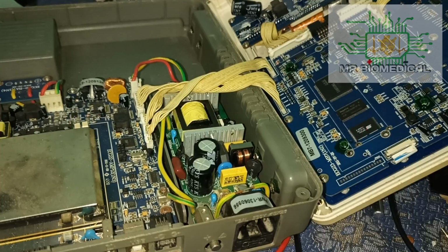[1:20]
Right, here we have an ECG machine which came in for no power. The model is Nidek, a 3-channel machine, and the problem is with the power supply board. But how do you tell whether the problem is with the power supply or the main board?
It is very simple. There are two indications here, one is AC and one is battery. If both are not blinking, then you can assume it is a power supply board issue. Before going to the power supply board, you should make sure the fuse is working well and the circuit is good, including parameters like fuses, NTC, varistor or something like that. That is a circuit protector, so make sure everything is working well.
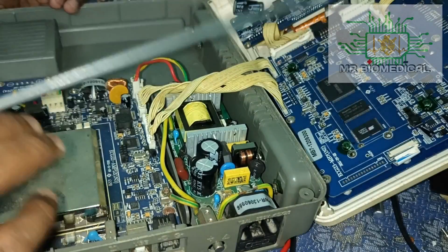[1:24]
In this case, we're going to open this machine and see what's inside and how that PCB looks. After that, we will see how to rectify the problem, and whether it will be working well or not. So let's see. Now we open the machine, and I'll tell you one by one.
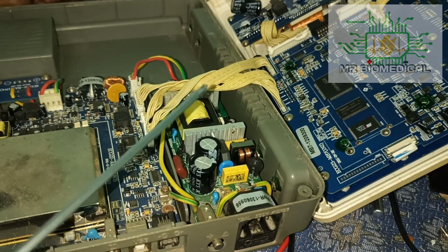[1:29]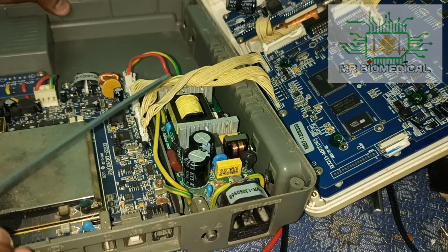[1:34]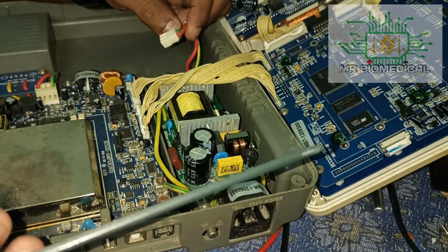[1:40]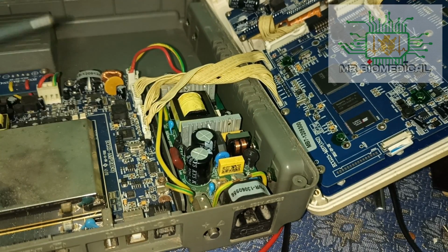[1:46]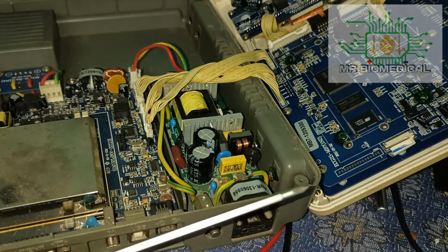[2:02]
This is the power supply board, because the 230 input is coming here, and the processors are here, and then it will give the output. This is some 12 volt or 24 volt or 8 volt, 9 volt, something like that. It will go to the main board. This is the main board, and this section is called the acquisition section. Acquisition means it will get the signals from your body and convert them to the graph in the machine. So this is the main module, and this is the acquisition module, and this one is
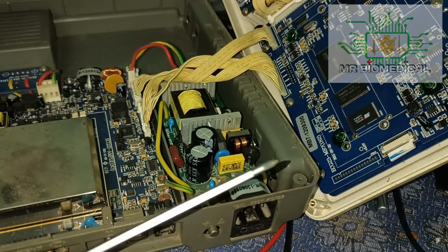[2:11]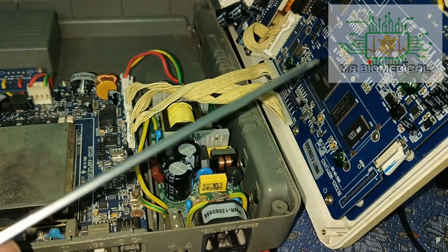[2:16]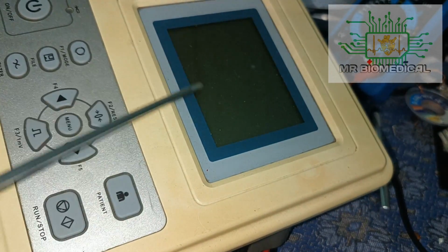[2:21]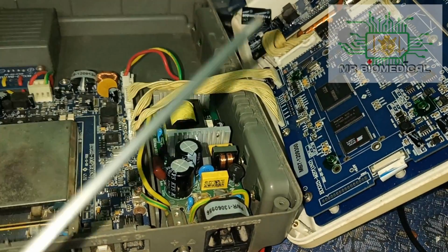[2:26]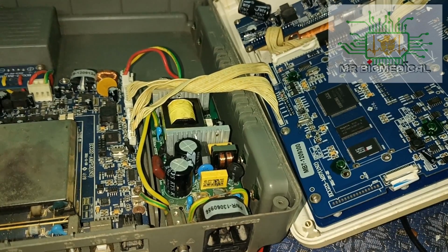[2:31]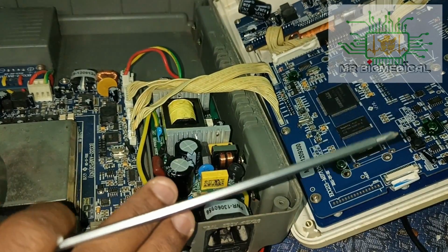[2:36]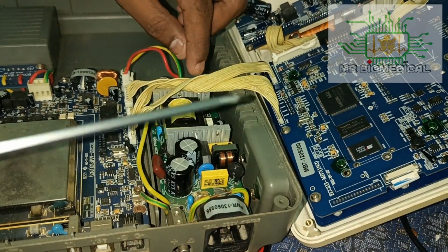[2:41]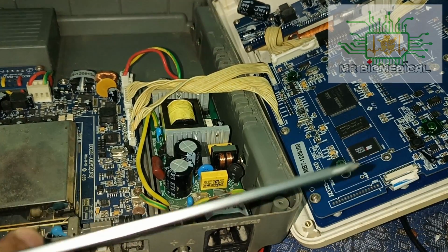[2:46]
the printer. As you can see, this is a printer, and this one is the LCD drive, and here you can see the LCD and keypad PCB, and this is the printer. Okay, so these are the basic parts, and now we are going to check what the issue is. As you can see, we didn't get any LED indication. So I will open this power supply module, and after that we will see where the complaint is.
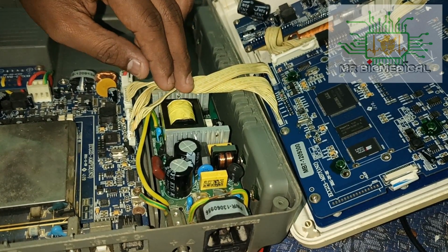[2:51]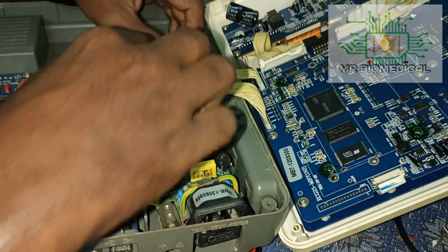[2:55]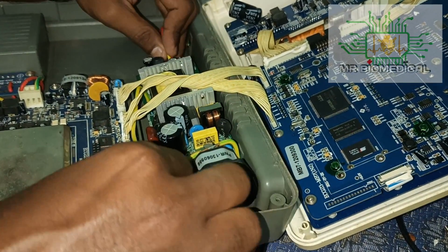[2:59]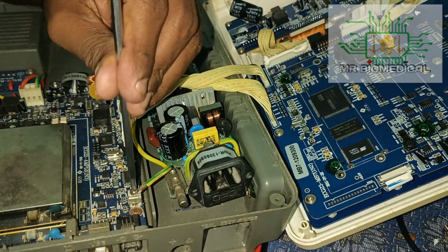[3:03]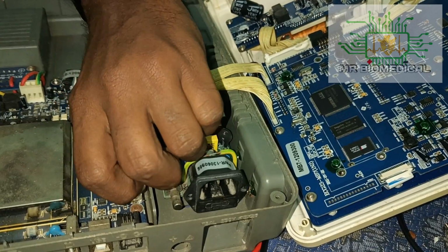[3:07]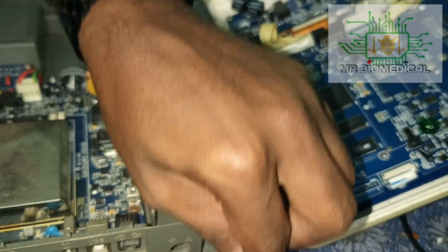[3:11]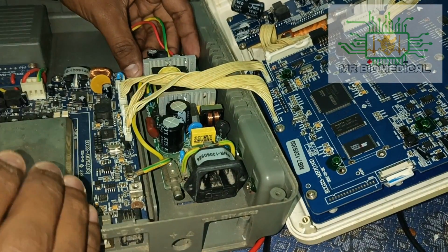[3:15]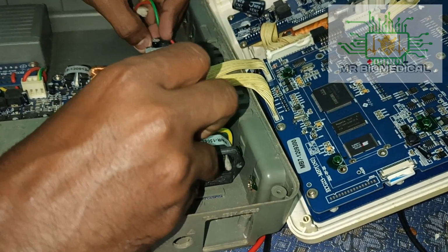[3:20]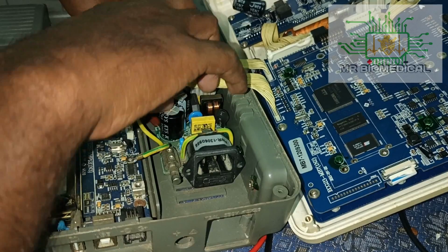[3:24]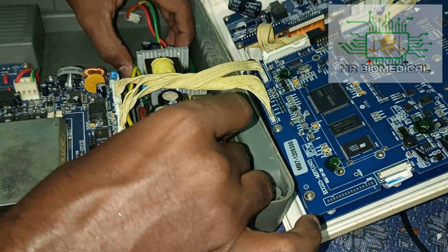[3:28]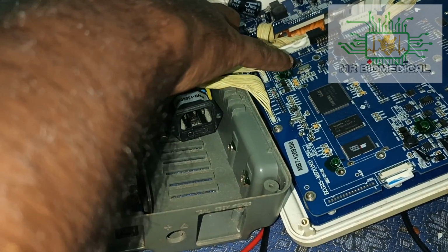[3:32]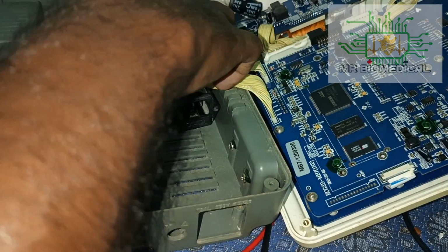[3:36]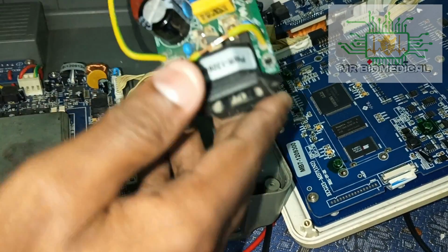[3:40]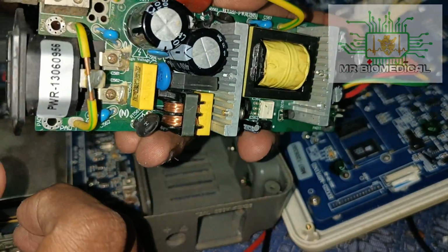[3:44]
I'm removing the power supply from the machine so that we can get full access to repair. For the beginners, I will tell you the secret. If you have a problem with a power supply board, just go with a visual inspection, because 70% of power supply board complaints can be repaired by visual inspection alone. You have to know how to visually inspect it, and after that you can use some multimeter things, and you will succeed. So this is how the PCB looks.
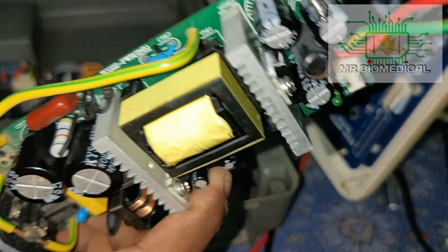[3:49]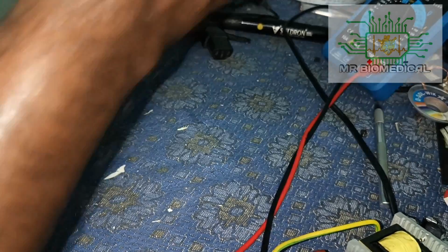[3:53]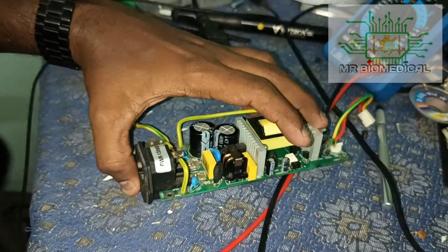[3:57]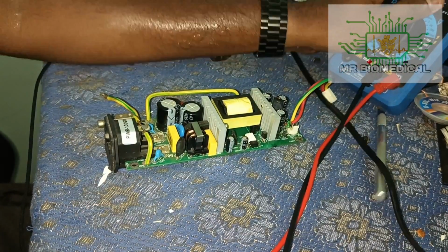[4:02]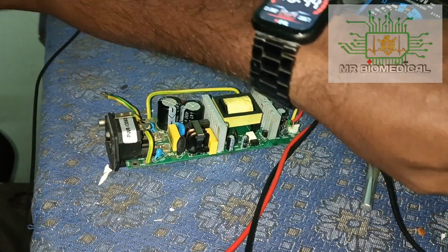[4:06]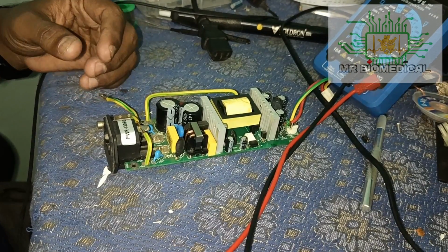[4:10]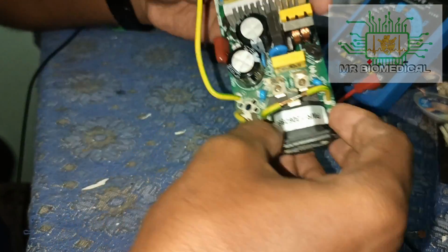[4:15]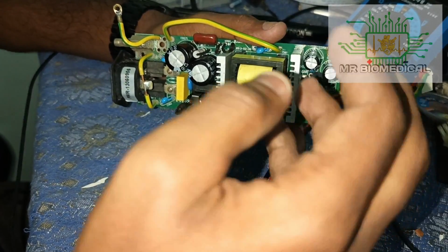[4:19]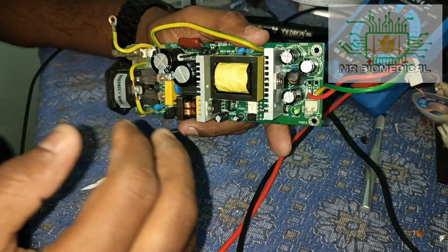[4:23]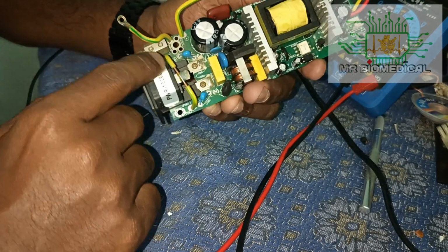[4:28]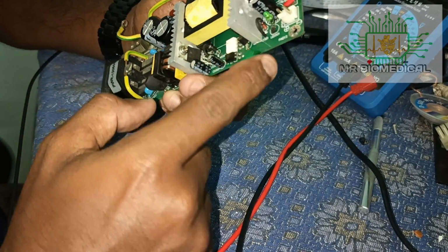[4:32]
Okay, so now I'm folding up the ECG machine, and we are just going to work on this PCB. The requirements are the multimeter, soldering iron, some screwdrivers, and something like that. Now the first procedure is always visual inspection. That is what I am always doing, and that is what all electronics engineers are doing worldwide. First thing, they will see if there is any damaged part or something.
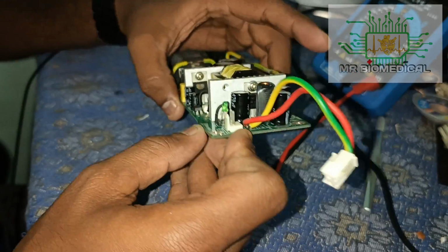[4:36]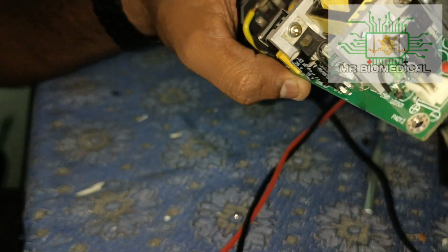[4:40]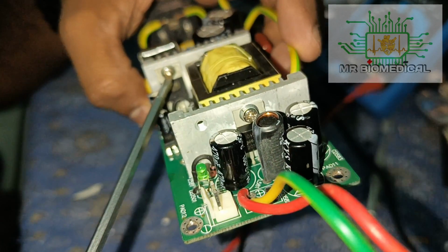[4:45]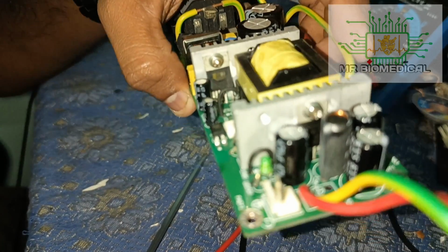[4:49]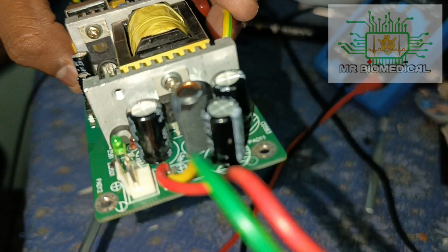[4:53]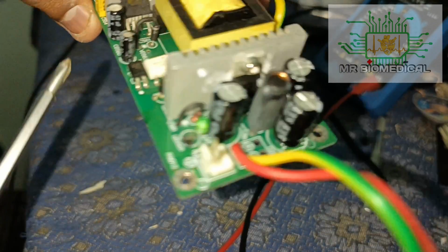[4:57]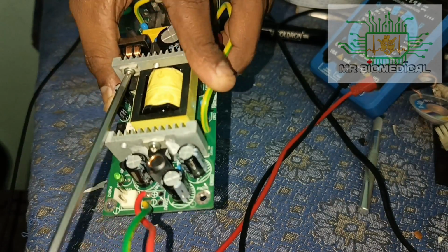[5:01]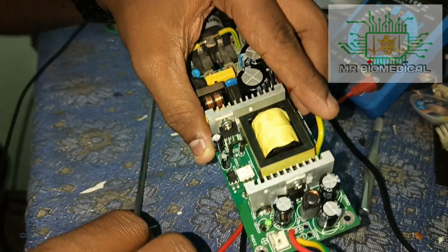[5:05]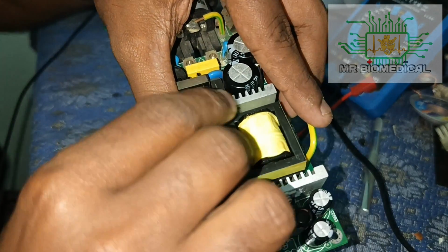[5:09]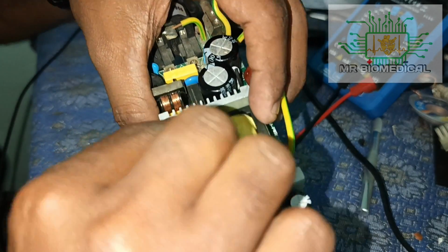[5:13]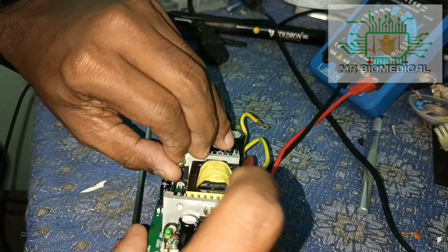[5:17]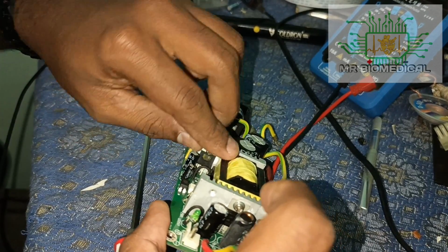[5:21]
As quickly as I can, I see a damaged IC here, a damaged transistor or damaged IC, something like that. As you can see, 1 2 3 4 5 6 pins are there. And the thing is, we don't know the value of this, because it blasted, so we couldn't see the value of the transistor. So what I'm going to do is remove this one and desolder it from here.
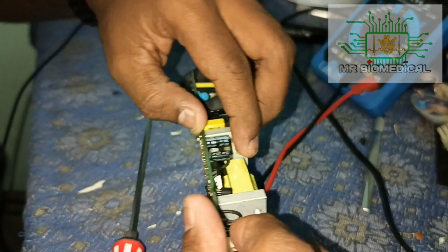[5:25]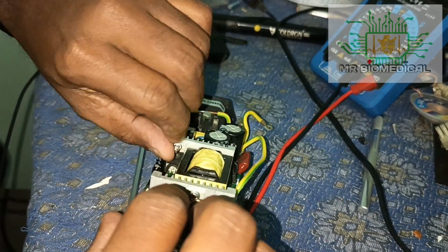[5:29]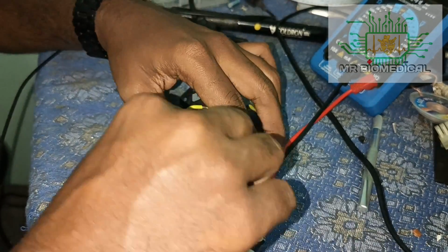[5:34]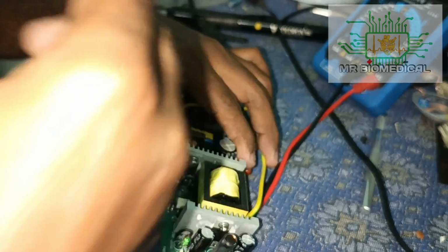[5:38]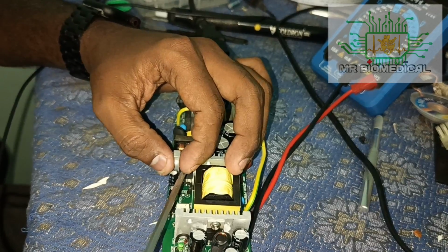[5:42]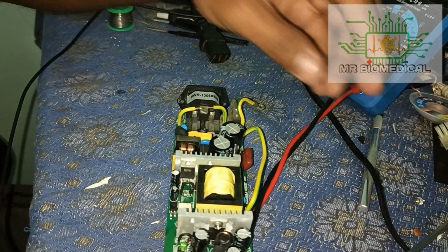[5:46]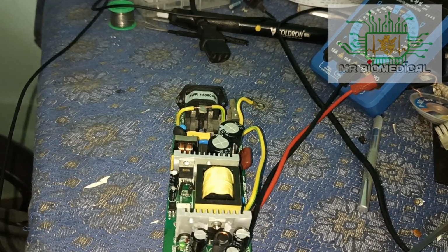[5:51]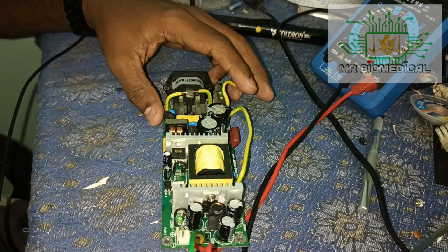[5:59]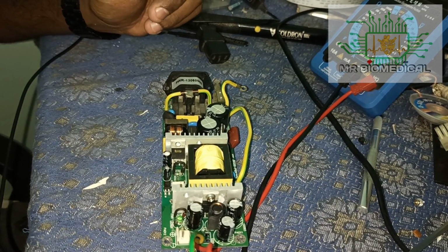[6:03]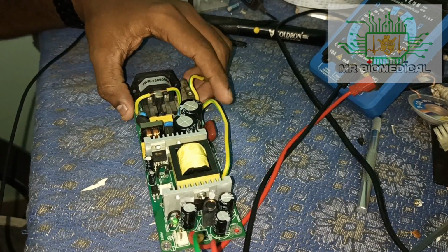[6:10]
After that, we will see whether we can find any IC in donor boards. We have a lot of donor boards, and if you need any donor boards, or any spares, or any components, you can directly WhatsApp me, and I'll be guiding you every time. And we are going to open our own shop very soon. In that shop you can see a lot of items which I'm using, a lot of multimeters and microscopes, and little components, and whatever.
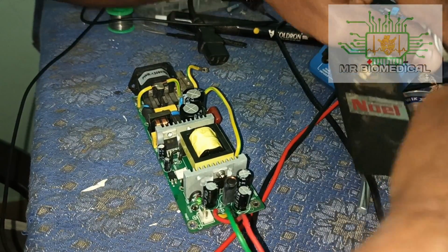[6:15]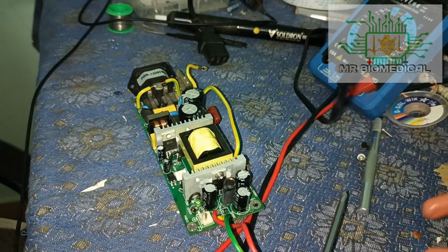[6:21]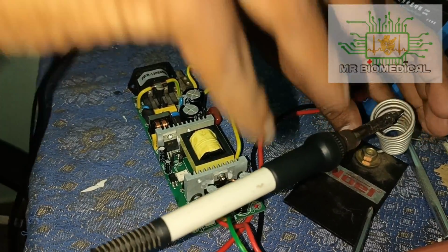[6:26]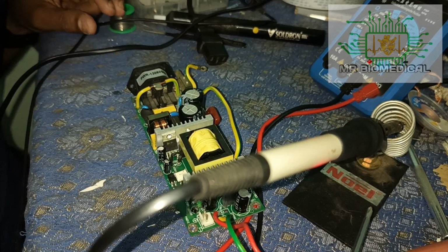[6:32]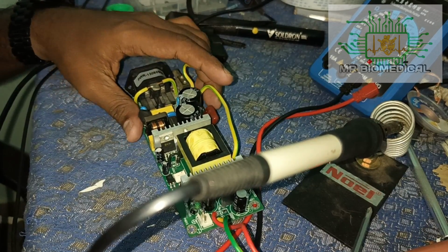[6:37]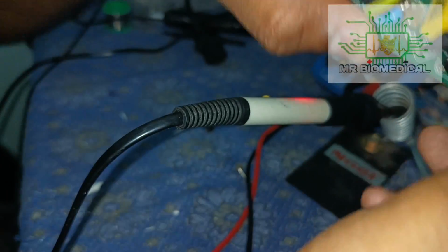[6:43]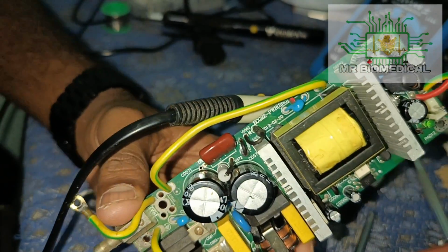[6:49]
Now I'm going to switch on my soldering iron, so we can remove it. Okay, it will heat, and before that I will tell you the major parts in any power supply board, so that you can have a little idea about how it works.
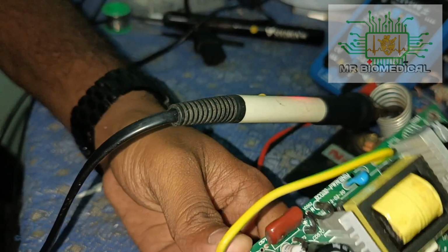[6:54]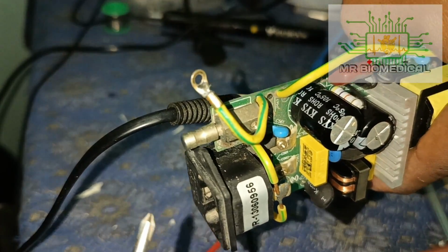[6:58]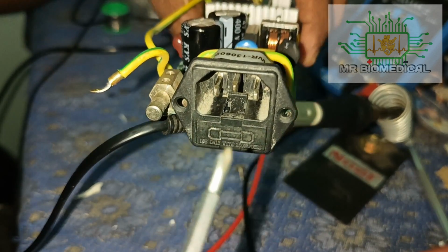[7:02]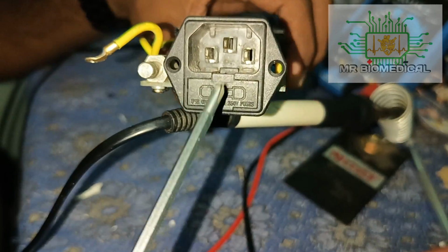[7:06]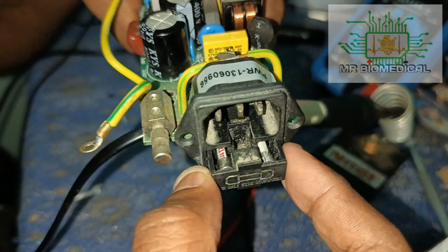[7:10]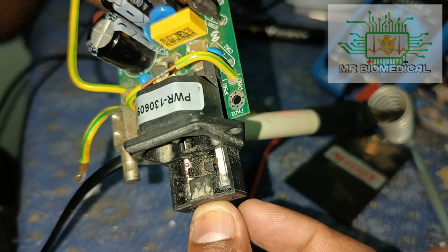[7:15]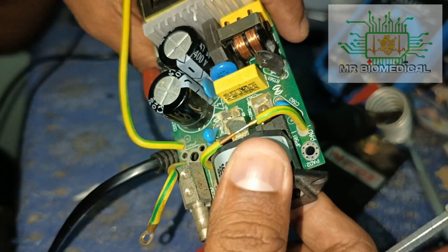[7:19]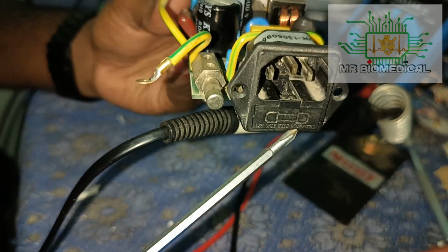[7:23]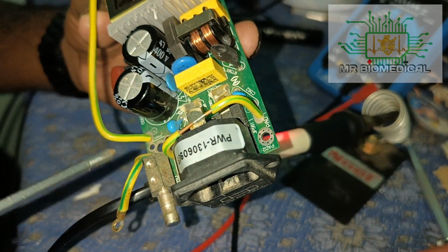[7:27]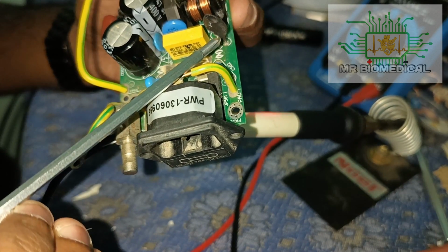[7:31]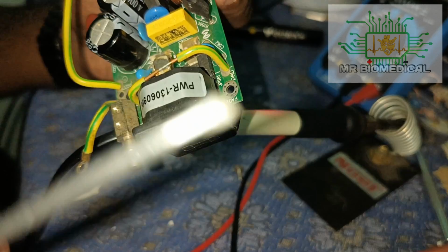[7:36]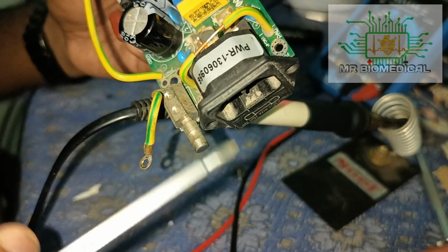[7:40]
This is the input, maybe 230 or 110, depending on which country you are living in. This is a socket, and this is a fuse. How to remove it? You just pull, and boom, you can see two fuses, and I already checked these fuses and they are fine. If you find this fuse keeps blowing, you have to check the circuit protectors. And what are the circuit protectors? This is a varistor, and this is an NTC, and some fuses. These are the circuit protectors which you should always look at.
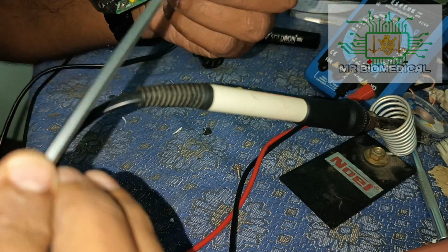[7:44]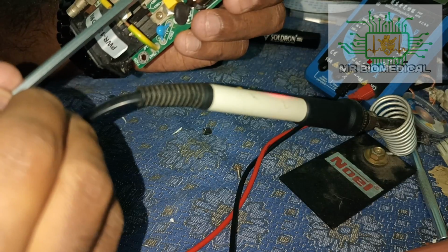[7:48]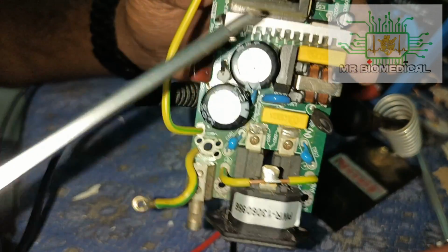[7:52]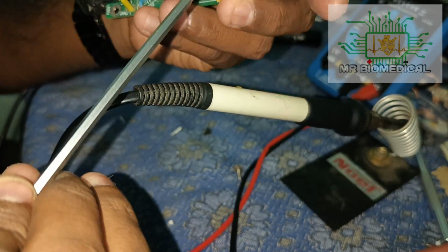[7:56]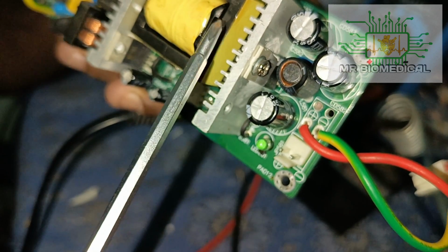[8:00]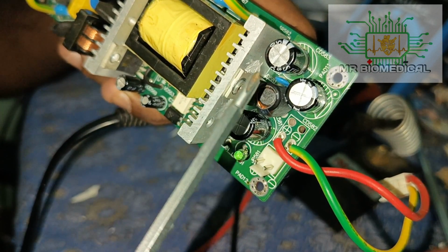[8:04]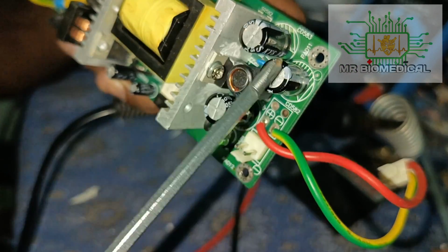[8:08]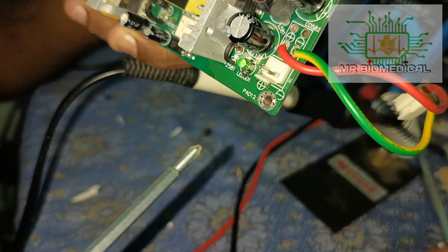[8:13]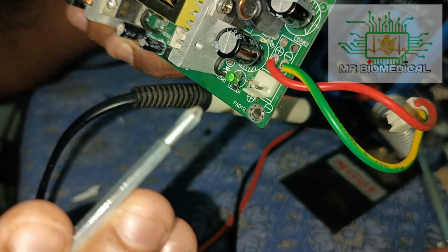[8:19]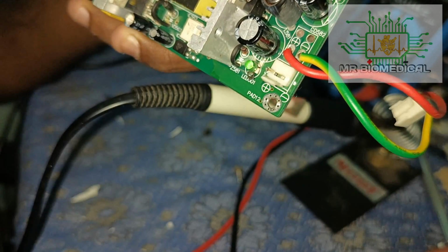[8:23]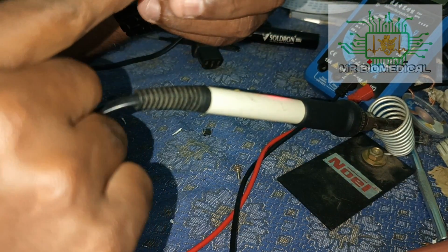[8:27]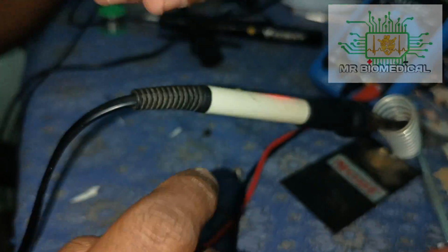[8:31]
After that, if you have a short circuit in the bridge rectifier or capacitor or something like that, then also the fuse will blow. This is the primary side, and this is the secondary side. In case the primary side is fine and the secondary side is shorted, you can easily see it through visual inspection, or else you can use a multimeter to test which component is damaged, or which component is opened or shorted. It's so easy. So first thing, we should remove this IC from the board.
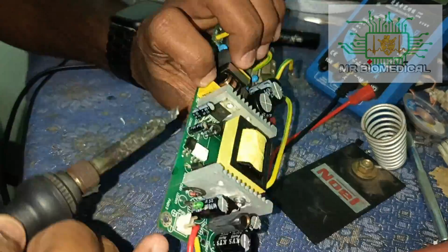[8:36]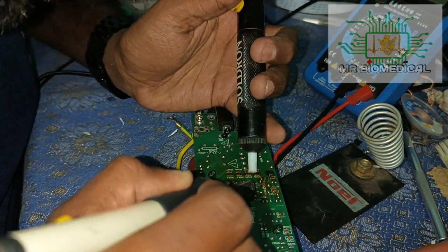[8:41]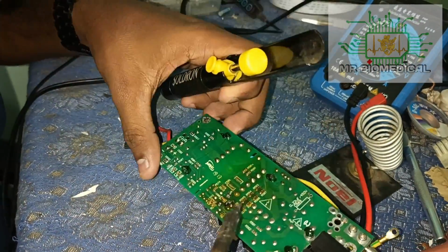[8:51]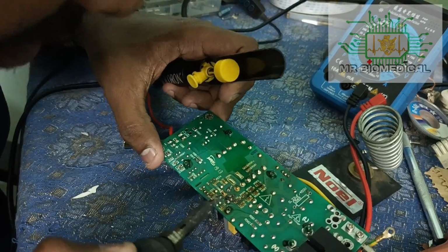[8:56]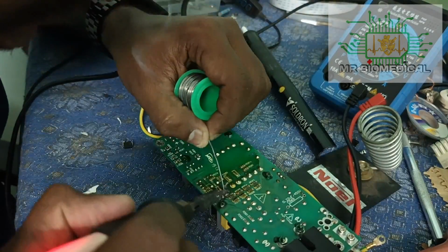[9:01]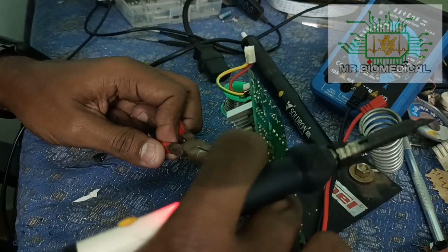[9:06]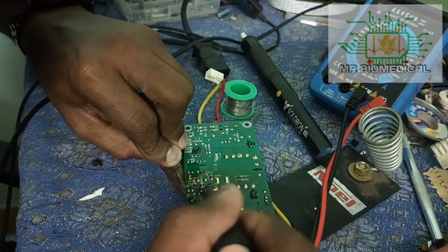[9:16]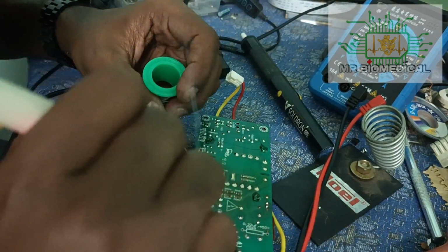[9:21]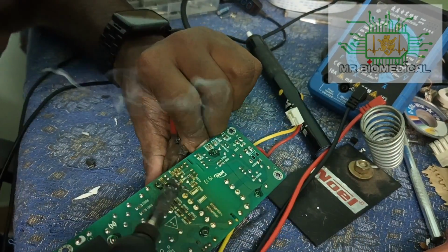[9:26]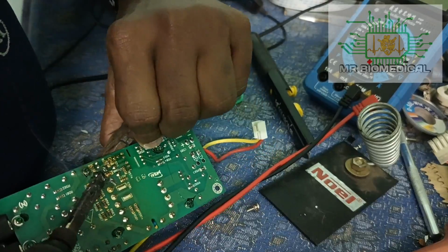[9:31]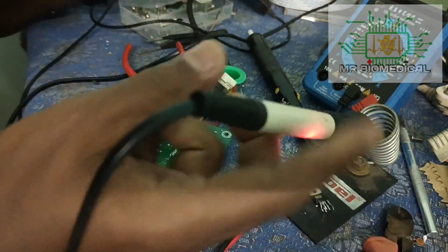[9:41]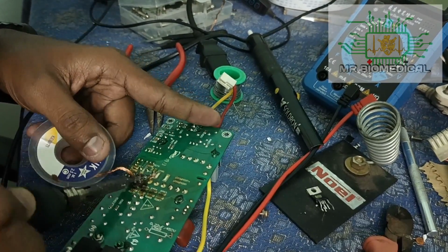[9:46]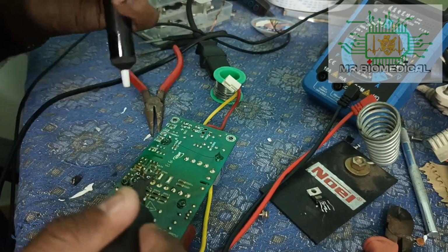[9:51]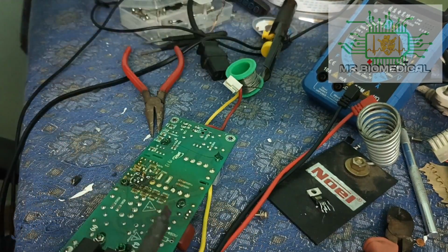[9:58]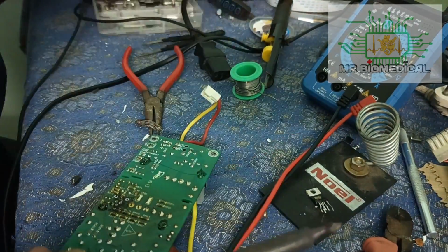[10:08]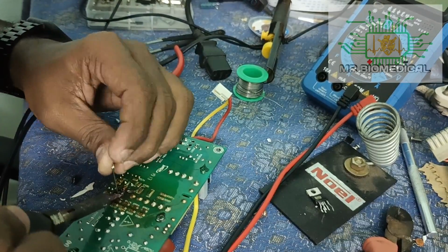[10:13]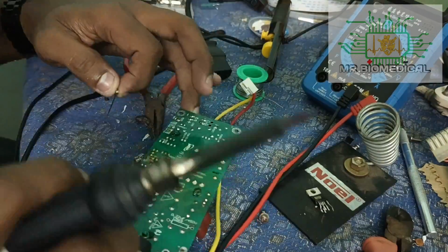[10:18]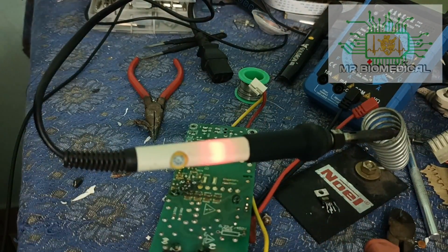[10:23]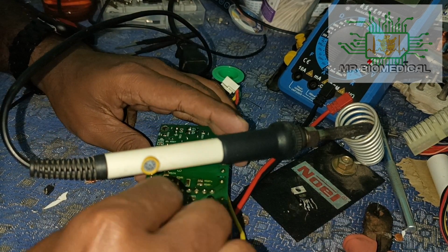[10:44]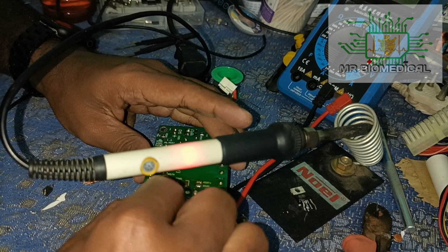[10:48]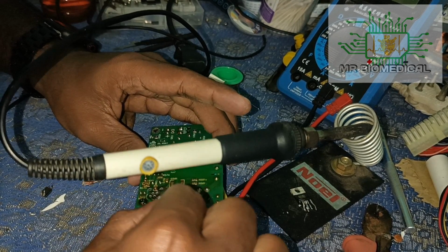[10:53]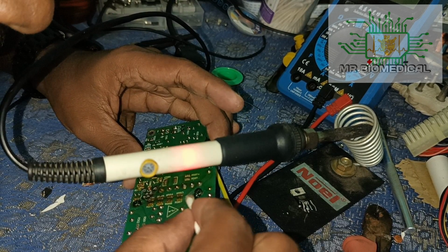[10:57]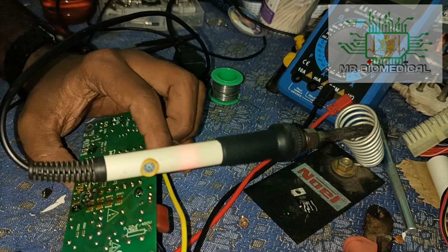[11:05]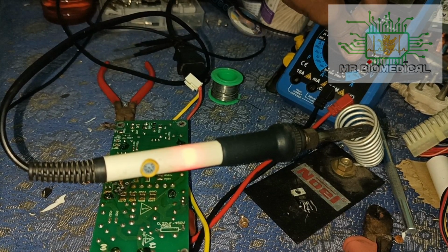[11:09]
Now it's cleaning time. I should clean this one properly. I'm using NC thinner for cleaning the boards. I'm using it in both SMD and SMPS repairs. So you choose yours and make sure every pad is having proper connections with the board.
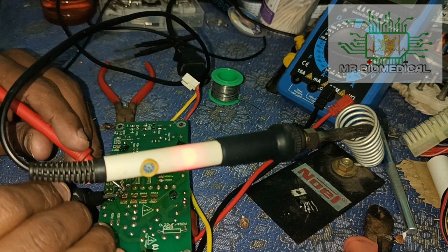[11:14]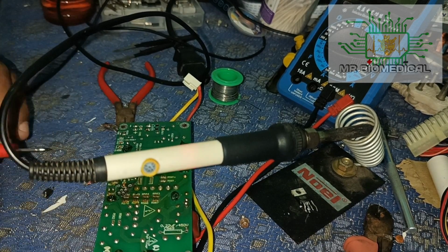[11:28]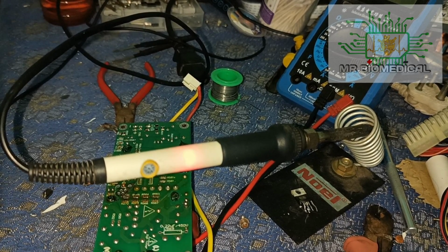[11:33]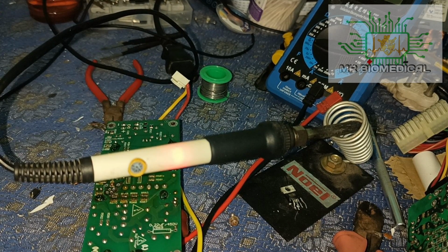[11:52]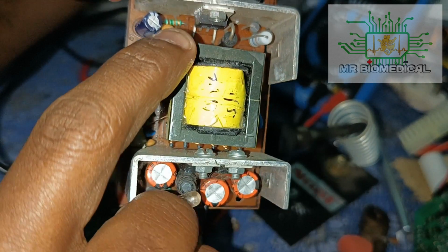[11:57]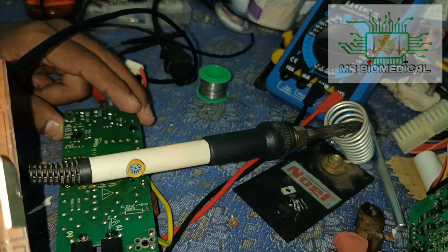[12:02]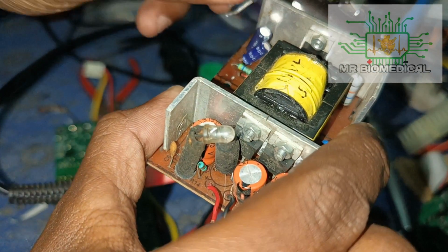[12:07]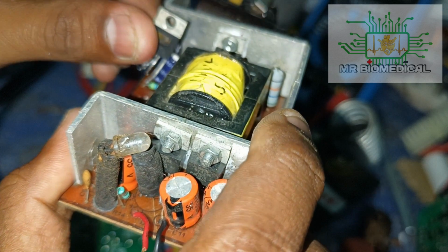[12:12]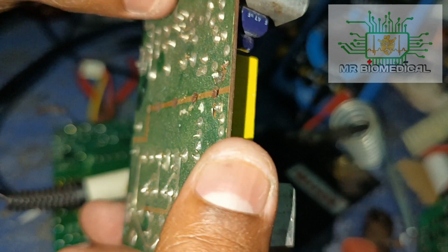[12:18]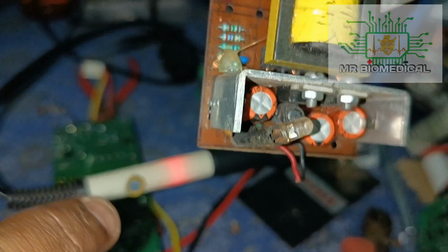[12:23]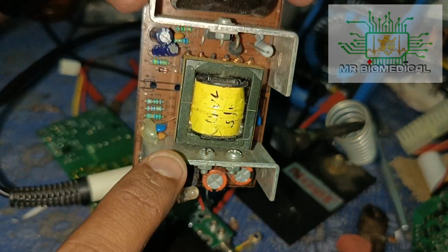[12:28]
As I told you earlier, I'm having the donor board here, and you can see some type of transistor over here. Wait. So it looks like the same one, so I think we can use this one. And here also, 1 2 3 4 5 6 pins. So let's remove this one and put it here, and see whether it will work or not.
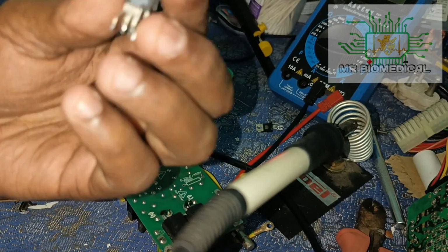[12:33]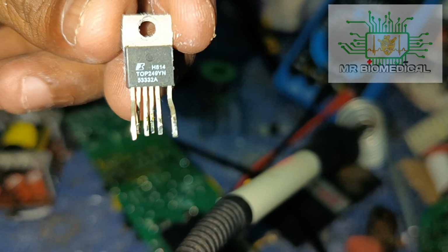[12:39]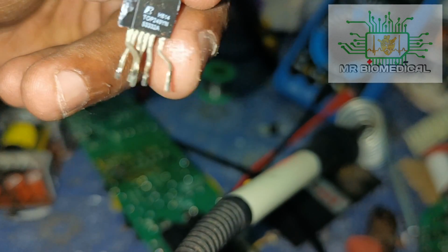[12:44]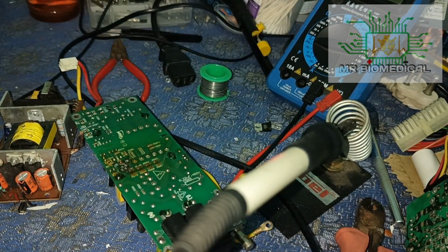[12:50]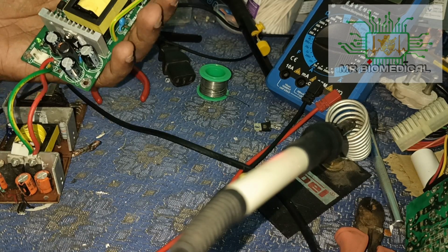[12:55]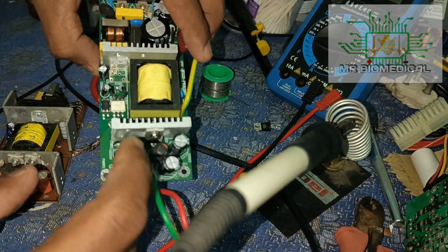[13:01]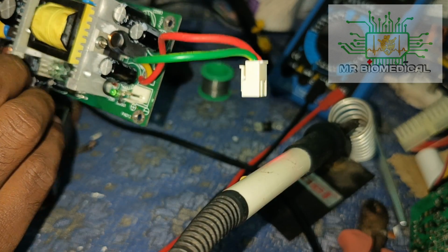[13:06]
Okay, now we removed this transistor IC smoothly, and this is a TOP249YN TOPSwitch. So I don't know whether it will work in that board, but still I'm going to try, because it is the only way, it is the only guess I have now, because that part was completely damaged. So we'll put this into this board and see whether it will work or not.
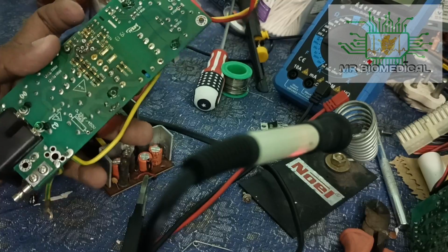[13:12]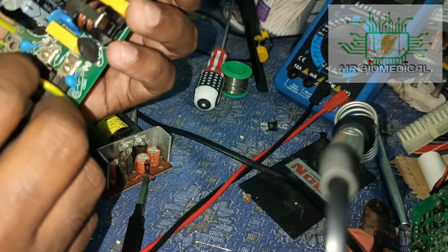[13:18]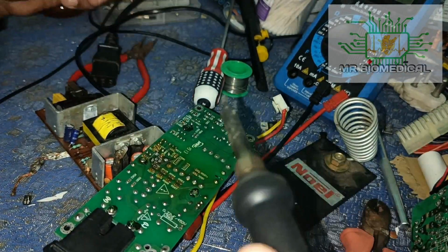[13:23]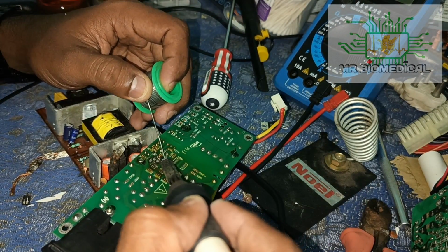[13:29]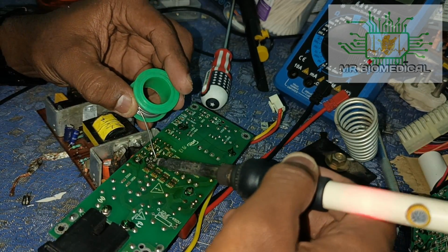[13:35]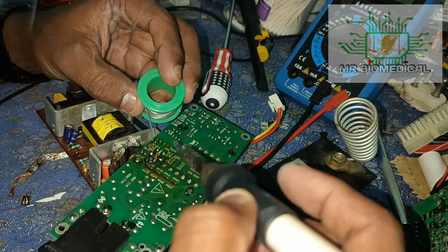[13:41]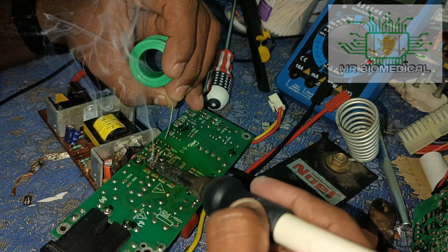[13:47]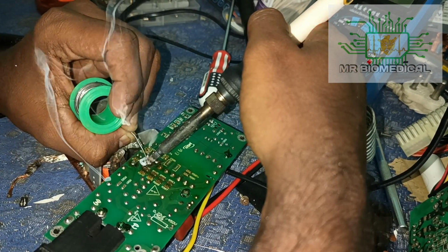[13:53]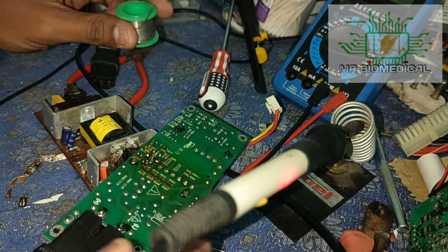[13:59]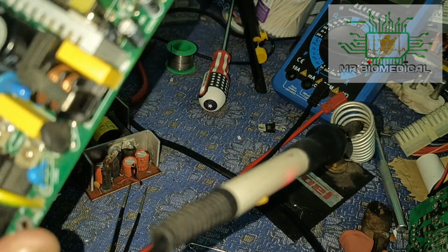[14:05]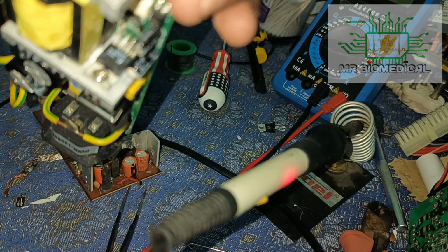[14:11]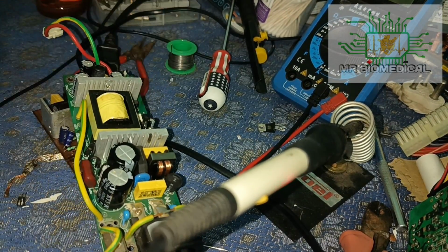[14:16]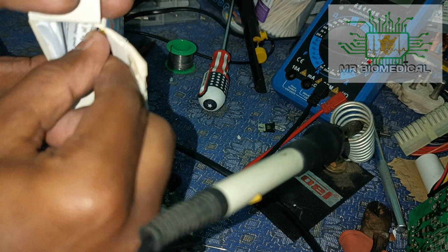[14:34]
Okay, now we connected the IC here and soldered the legs, and that's it. Then we can check whether the machine will work or not. That's it, it's all over. Now we can see front, back, and okay, now we connect this to the machine and see whether it will work. If it is not working, then we can do the alternatives, and I have this module, so we can use that alternative, don't worry.
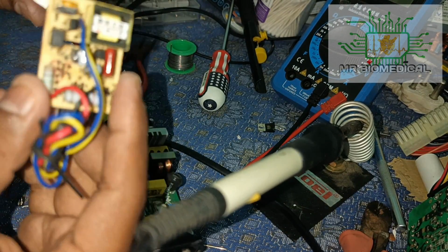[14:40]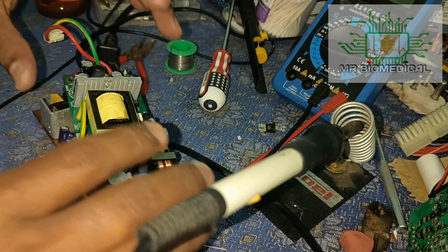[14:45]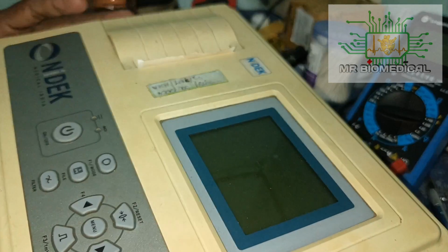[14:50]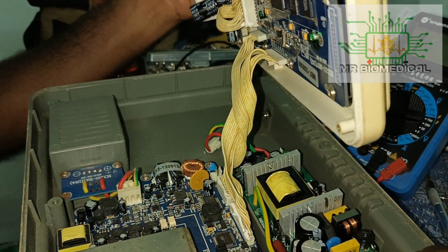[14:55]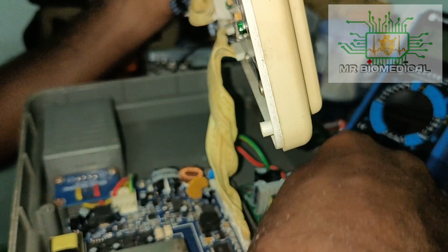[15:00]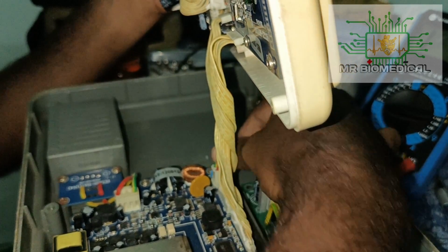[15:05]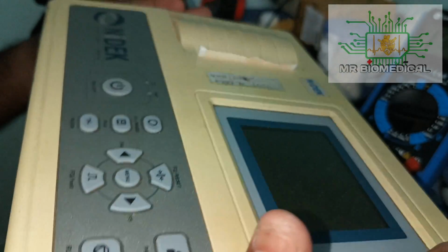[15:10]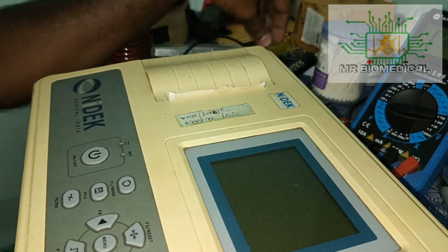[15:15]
So now I'm going to check this board on the machine. So now back to the connections. It is a more simple connection. One is input and one is output, that's it. Output connections here and input like this, and hope it will work. Let's see, where is the power cord?
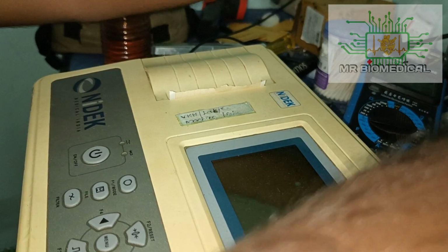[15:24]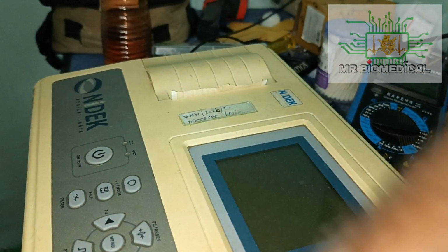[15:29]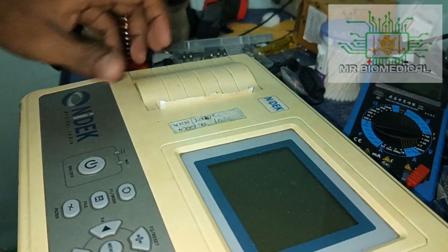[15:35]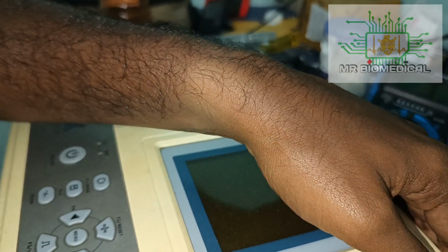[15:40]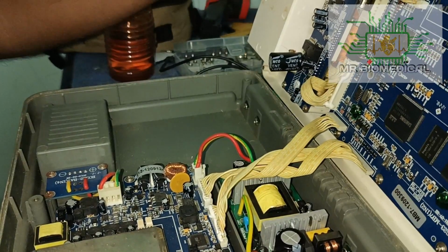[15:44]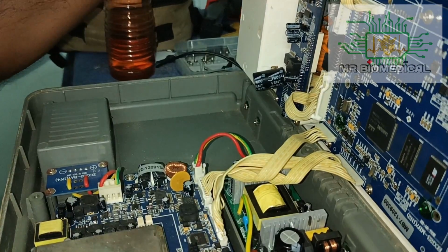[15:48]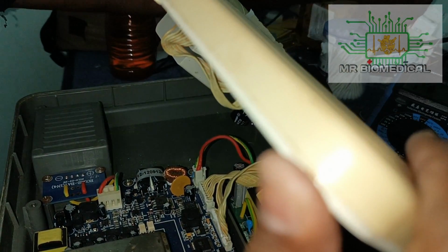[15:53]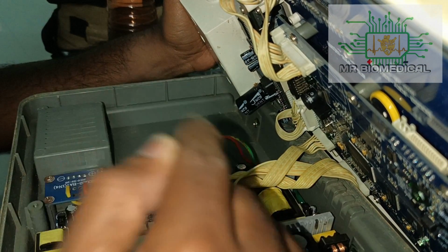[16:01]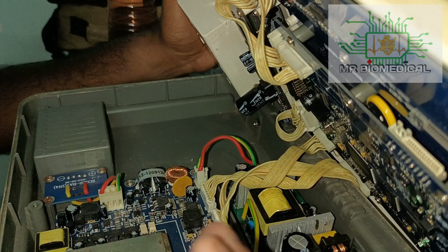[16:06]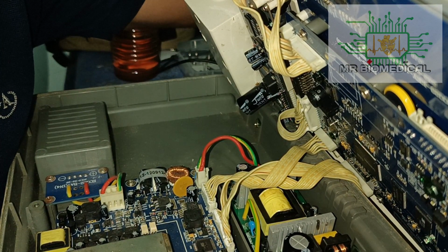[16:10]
Okay, I have a power cable here, and let's fix it here. Make sure every connection is not loose. Sometimes a blast will happen because we don't know whether the IC we put is right or wrong. So sometimes it will blast. So get ready. See, you hear one sound, click.
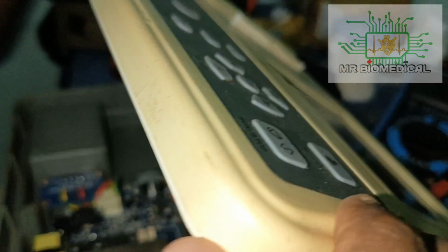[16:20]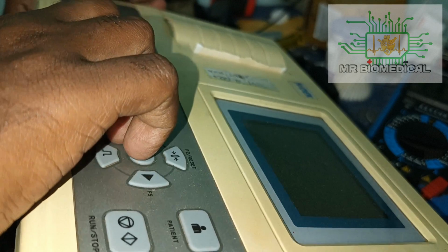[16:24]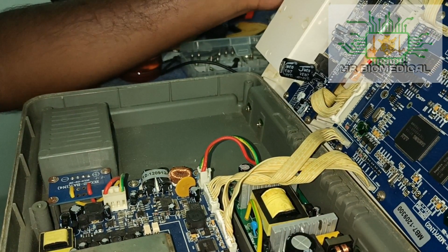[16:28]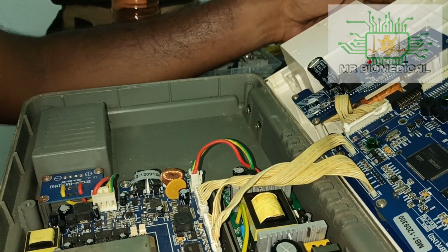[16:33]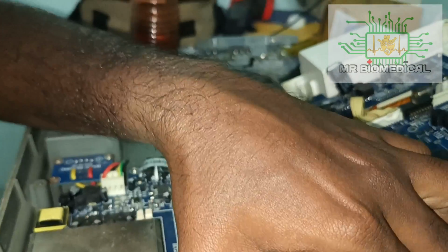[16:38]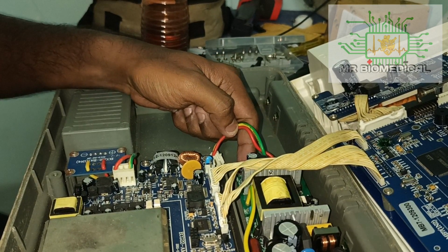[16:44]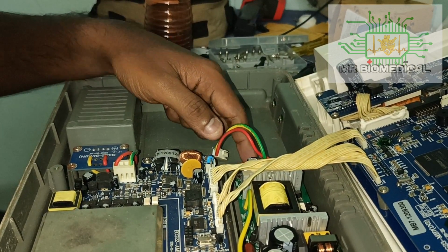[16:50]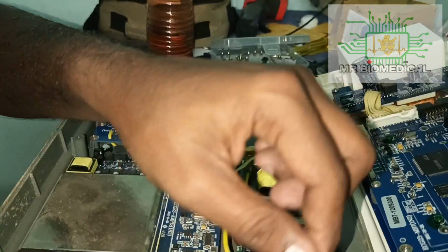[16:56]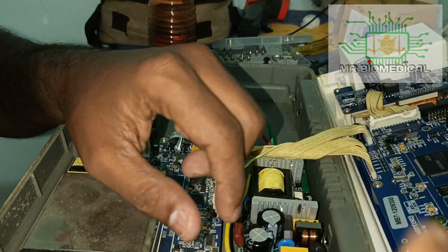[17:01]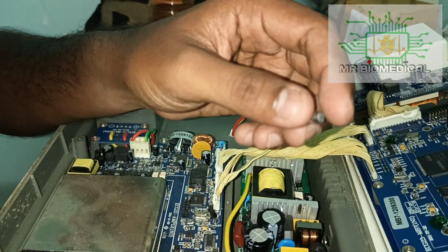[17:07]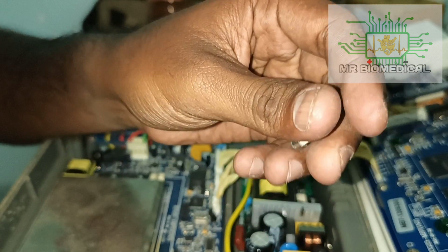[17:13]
And no damaged component here. How about the fuse? Remove everything and remove the fuse. The fuse is fine, and the other fuse is also fine.
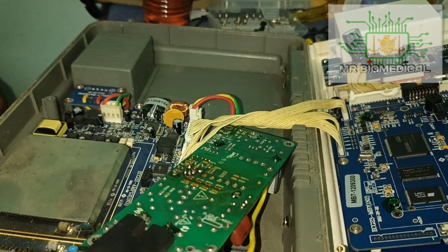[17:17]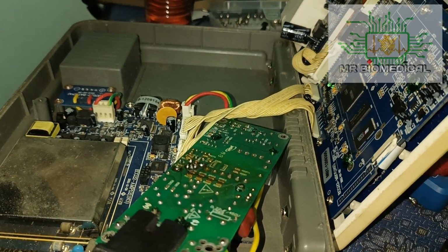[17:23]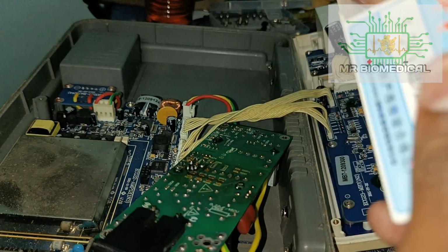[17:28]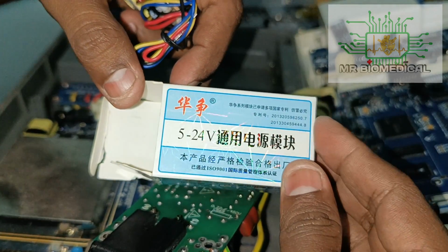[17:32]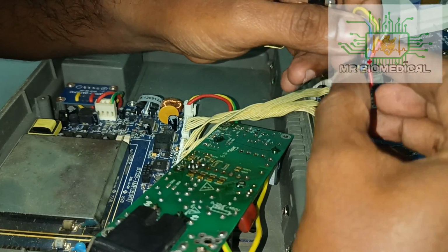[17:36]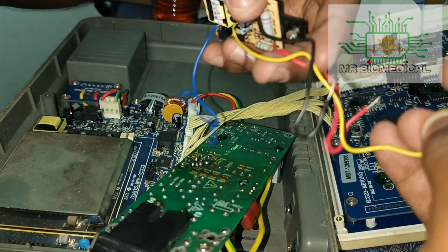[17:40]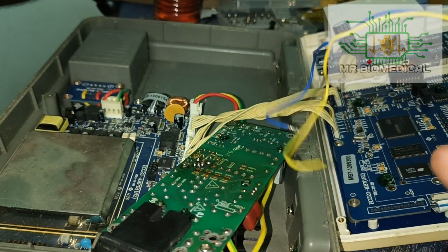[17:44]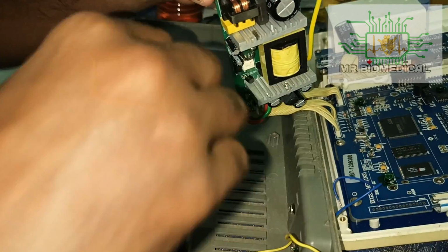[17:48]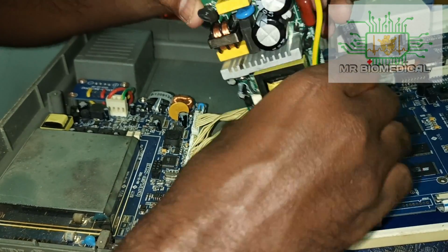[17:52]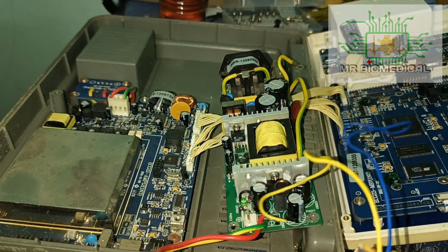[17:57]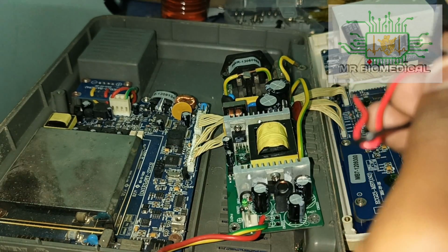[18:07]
So now we are going to the second method, which I'm going to use here. This is a 5 to 24 volt variable voltage module, having 4 wires, one input and one output. So I'm fixing it here, and then we'll see whether it will work. I hope it will definitely work. I've connected it to several monitors and several power supplies, and the result was good. So we can believe that this will solve this. Let's see.
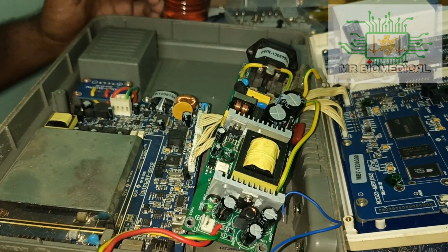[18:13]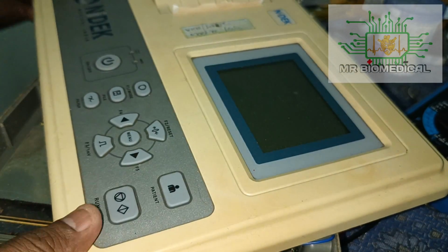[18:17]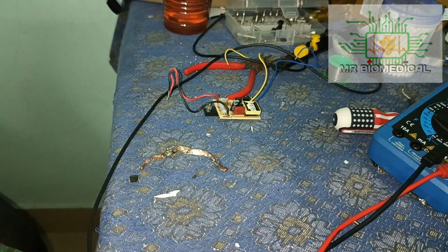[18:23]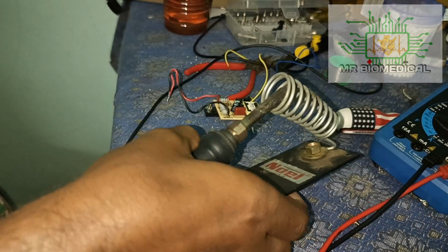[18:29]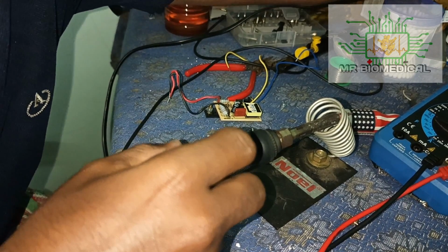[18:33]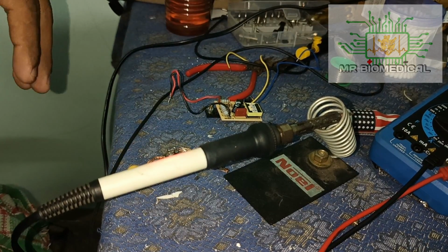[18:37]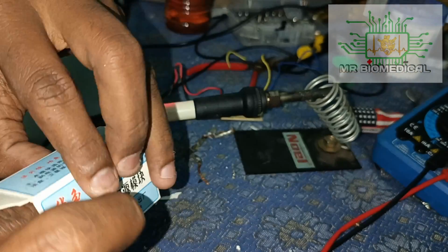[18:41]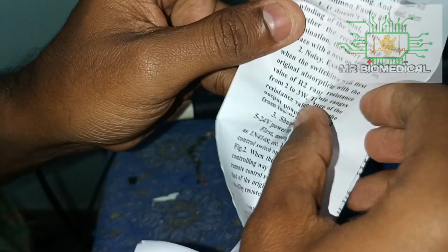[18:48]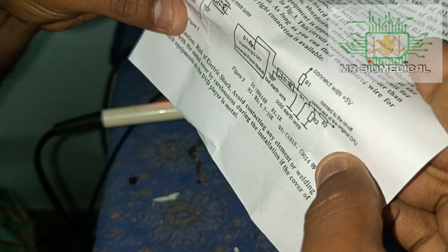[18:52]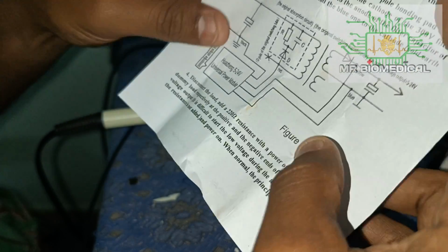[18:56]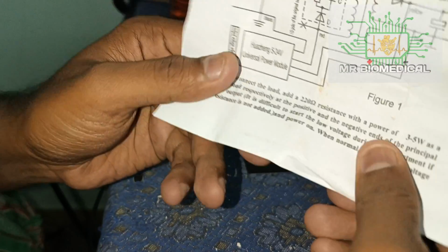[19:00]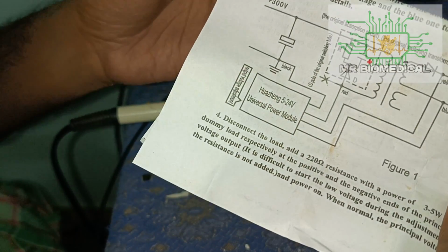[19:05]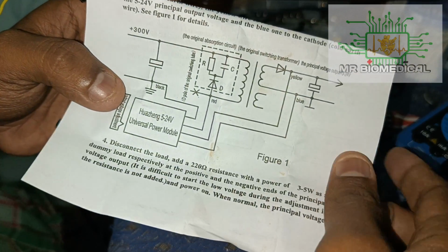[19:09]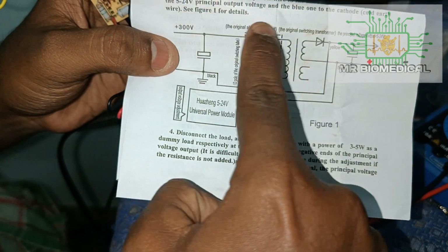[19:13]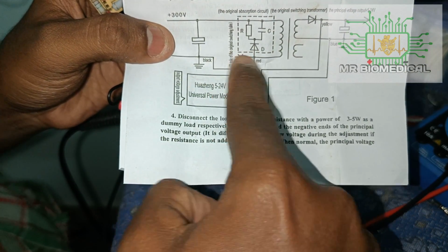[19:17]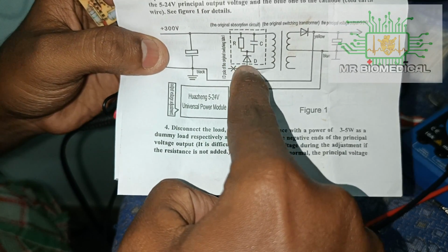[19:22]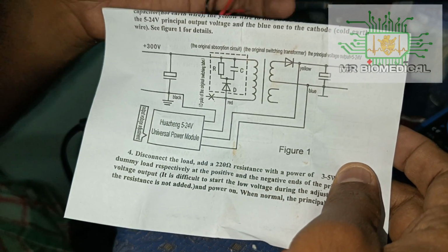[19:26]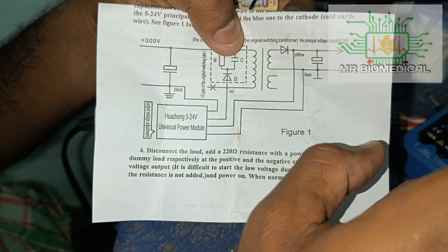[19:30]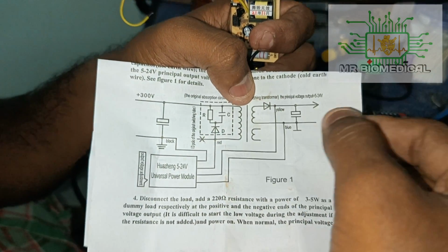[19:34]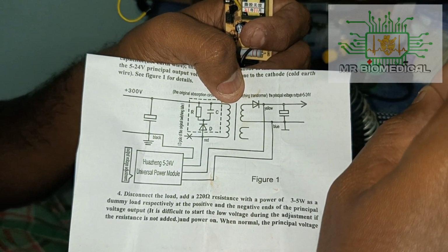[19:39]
So here the connection is so simple. I will explain to you. You have to connect like this. You can see red and black wires. The black wire is going to the capacitor minus, and the red wire is going to the primary coil. The primary coil is coming from here and ends up here. So on this side, before the diode, we should connect the red wire. After that, yellow and blue are going outside. So for output, we can connect it on the capacitor or to the direct output.
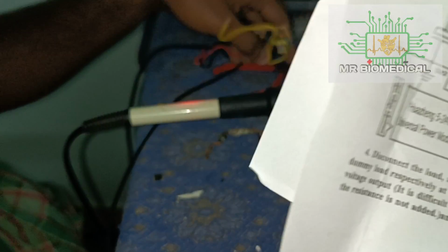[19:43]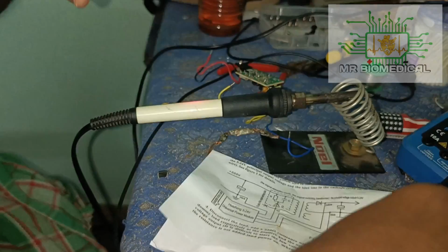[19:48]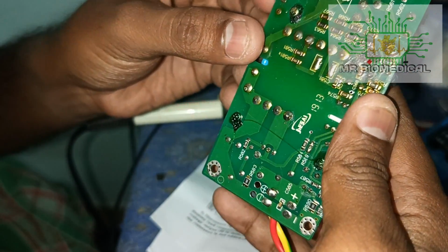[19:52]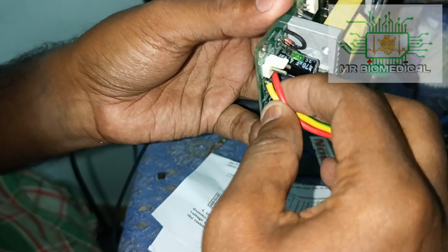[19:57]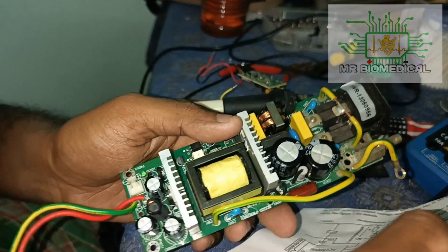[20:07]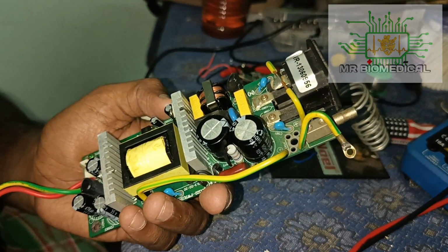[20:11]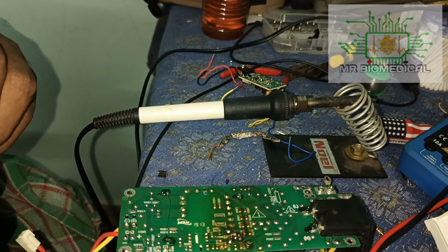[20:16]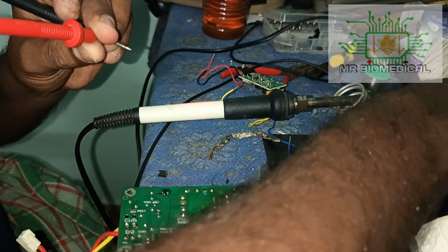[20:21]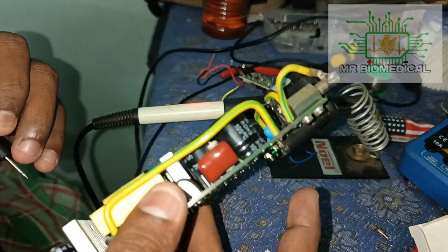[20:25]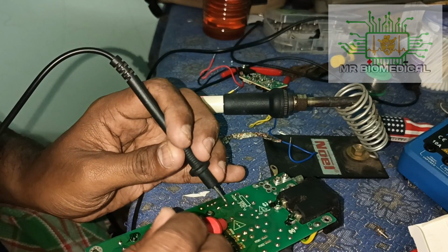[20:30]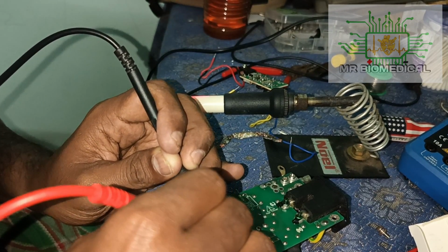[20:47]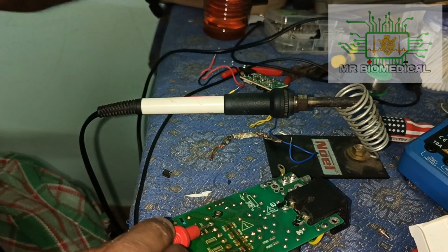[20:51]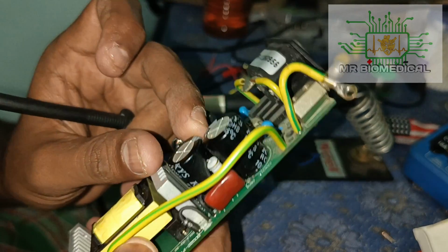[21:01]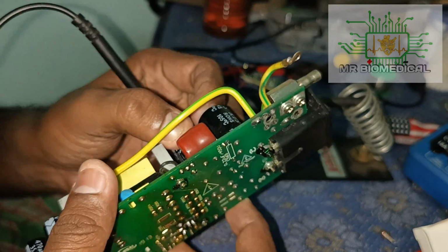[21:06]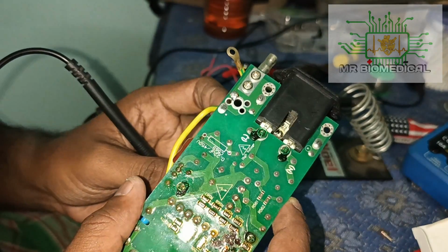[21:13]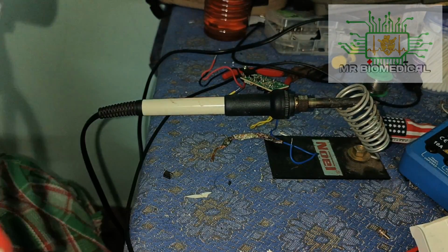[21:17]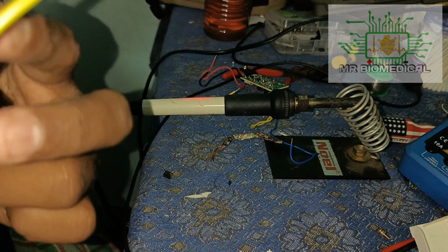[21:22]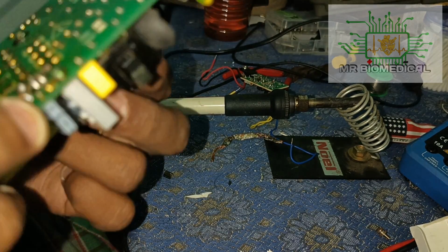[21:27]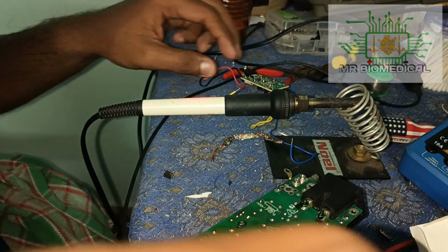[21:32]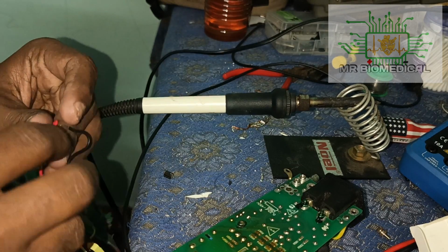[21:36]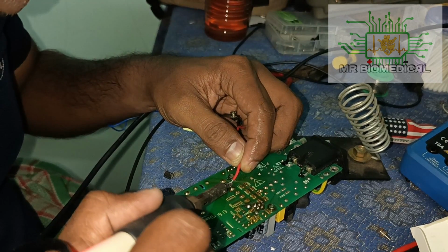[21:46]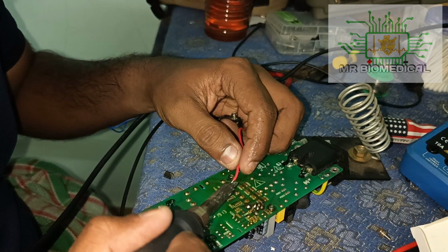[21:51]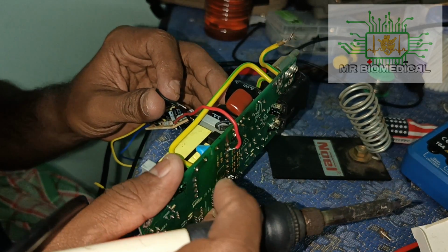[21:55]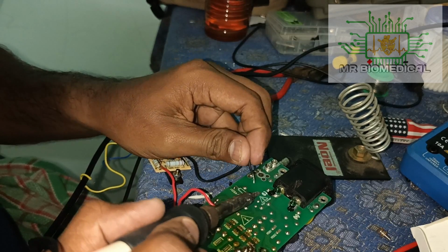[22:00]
In this case, we can easily connect here directly. So it doesn't matter where we are connecting, the output will be the same. So let's practically do it. I should connect the red wire here and the black wire here. Black wire to the capacitor negative. So I'm going to fix it.
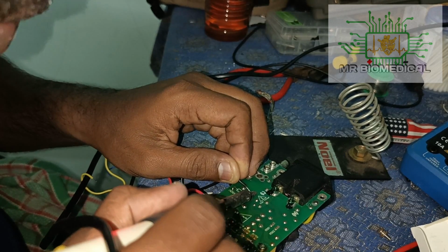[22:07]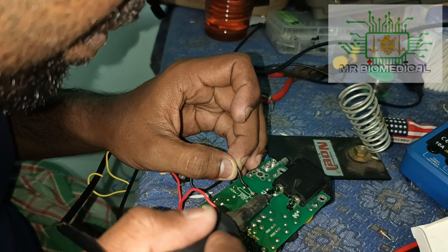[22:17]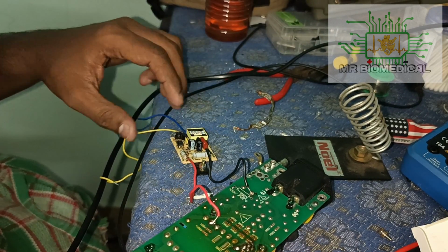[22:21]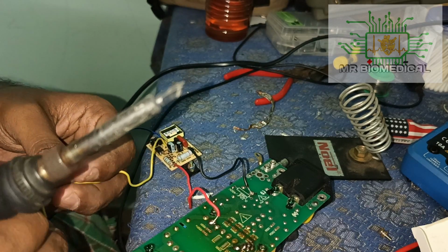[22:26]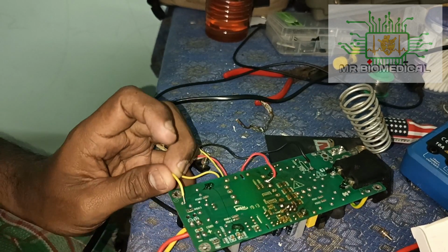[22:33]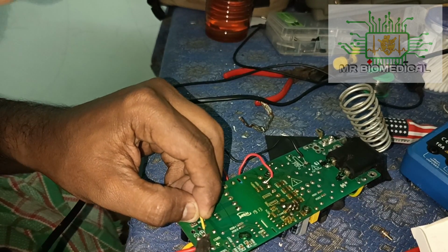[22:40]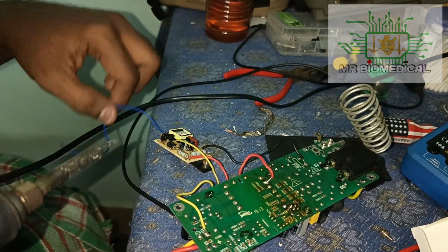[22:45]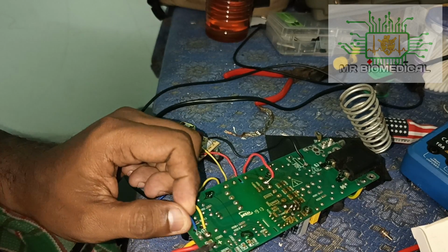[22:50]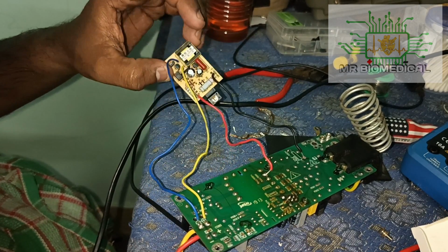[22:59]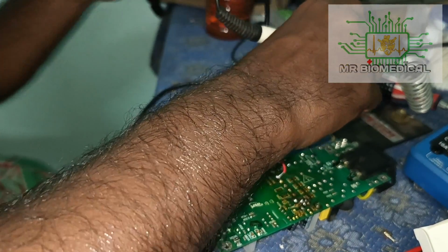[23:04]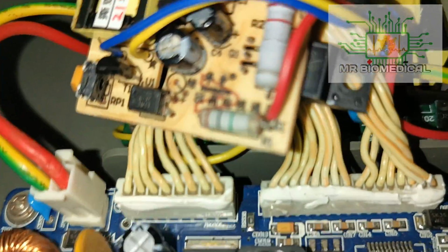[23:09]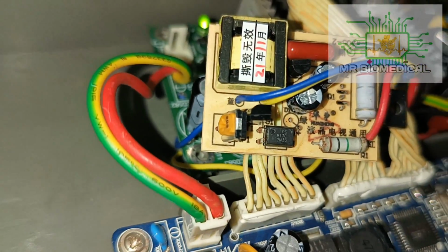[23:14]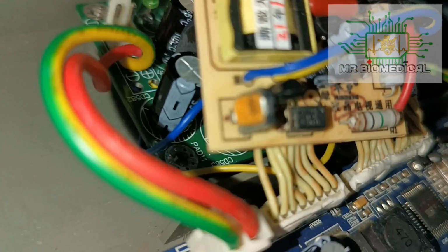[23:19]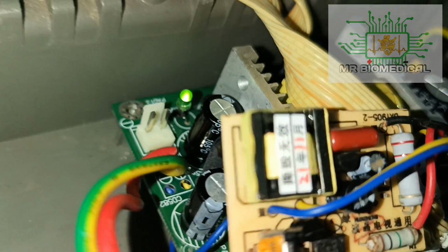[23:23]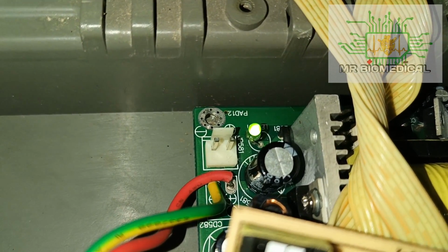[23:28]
That's it. And the other two ends, yellow is positive and blue is negative. So yellow is here on the positive side, as you can see this is positive and this is negative. So yellow is going to positive and blue is negative. That's it. So it is the easiest diagram, and we can easily get the output from here. Okay, now I reduced it to 12 volt by using this potentiometer here. As you can see, 203 is a potentiometer, and now the bulb is not blinking and the stable output is coming, I guess.
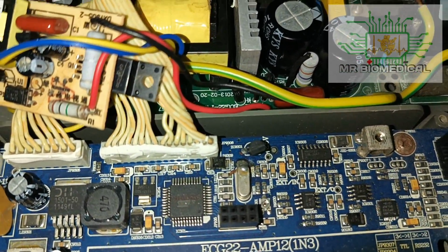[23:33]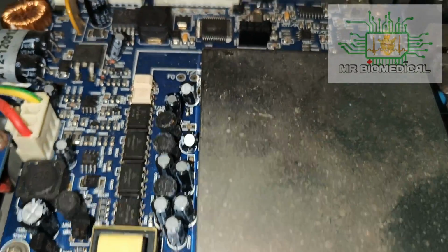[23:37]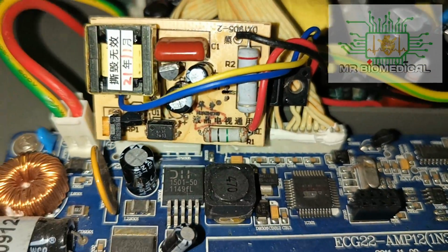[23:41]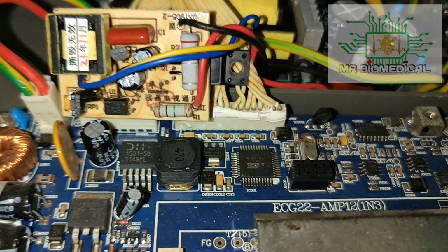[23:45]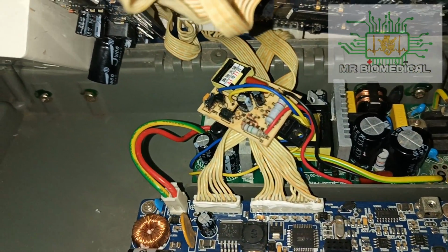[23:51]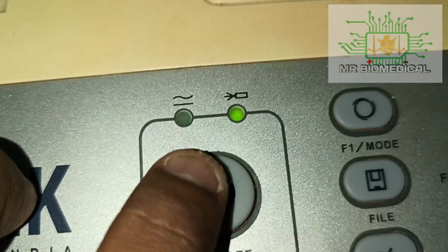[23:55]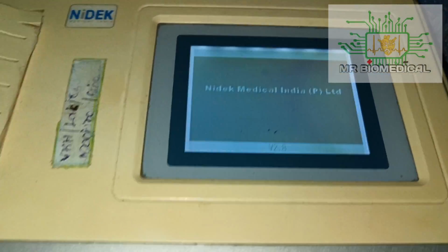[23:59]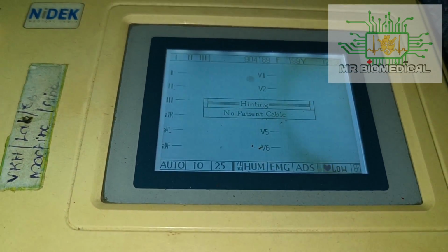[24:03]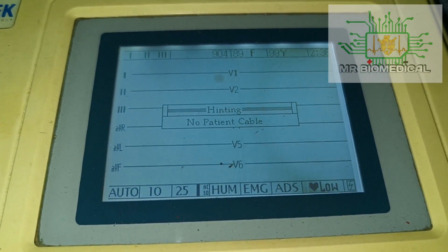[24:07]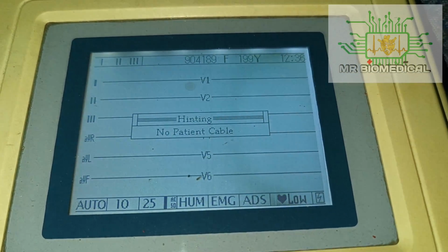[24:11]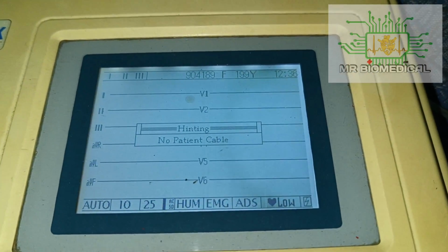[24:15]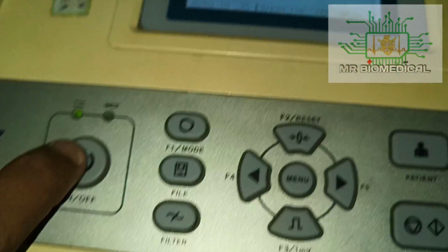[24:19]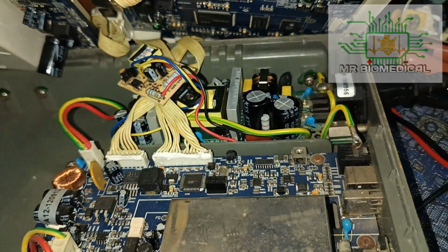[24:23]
So let's see from inside. Before that, make sure you have room for this module. Check whether the machine is getting on. Same thing, and the light is blinking. Let's switch it on, and yes, that's it. The machine is getting on with no error and without screen flickering or anything. So the machine is good. So now we have to make room for this one and close the machine. That's it.
Hope you enjoyed this video, and this is how we have to solve the problem. And in electronics there are a lot of alternate ways to resolve a complaint. So it is all up to you, because you have to decide what things you should utilize to upgrade yourself. So this is my level of repairing, and the machine is working well from today night, and tomorrow morning it will be running to see the feedback from the boards.